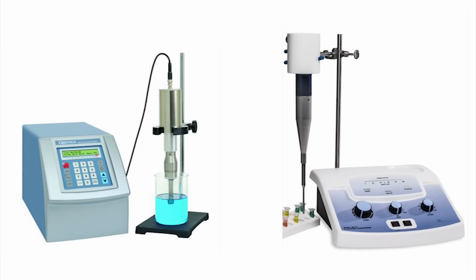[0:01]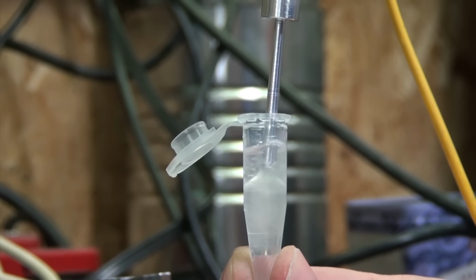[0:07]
I want an ultrasonic homogenizer. These are great little tools that can be used to quickly pop open cells to release proteins and DNA. Or they can produce emulsions that never separate, and can produce flashes of sonoluminescent light if they have enough power.
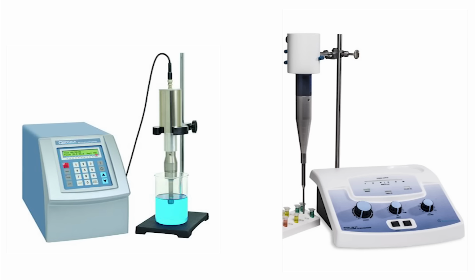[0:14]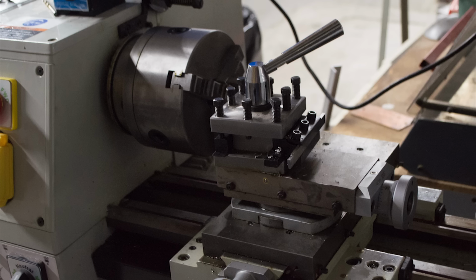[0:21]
Normally, you buy the kilowatt ones, which will cost well over a grand, which for a tool I'm only going to use a couple of times probably wasn't worth the investment. But now I've got a tool that can make anything, so I just built myself one instead.
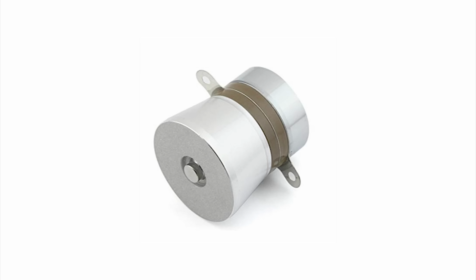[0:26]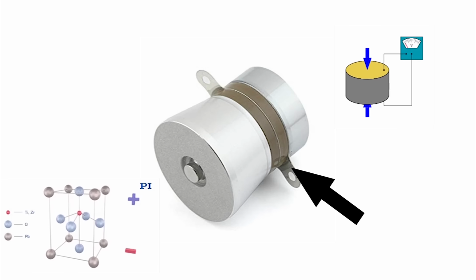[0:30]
To get this started, here's a quick tour of an ultrasonic generator. First, there's a piezoelectric crystal called a transducer that will shrink and contract as we put electricity through it. By changing the polarity quickly, we can make it vibrate thousands of times per second, producing ultrasonic waves. And the more power we put into it, the more it will shrink and contract during each cycle.
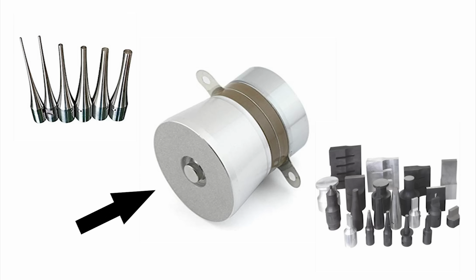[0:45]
All this motion is fed into what's called a horn, which is a big hunk of metal that takes these vibrations and focuses it the same way a lens focuses light. If we make the horn flare, it'll spread the vibrations over a larger area, but make them weaker. And if we make the horn pointy, it focuses and concentrates the vibrations, making them stronger over a much smaller area.
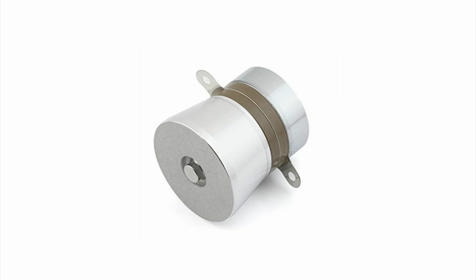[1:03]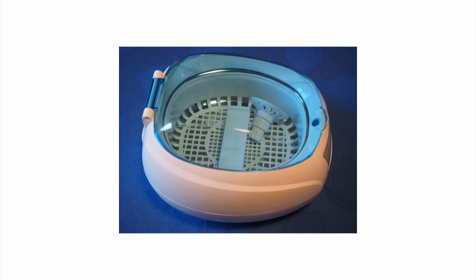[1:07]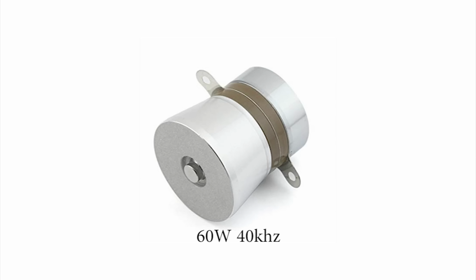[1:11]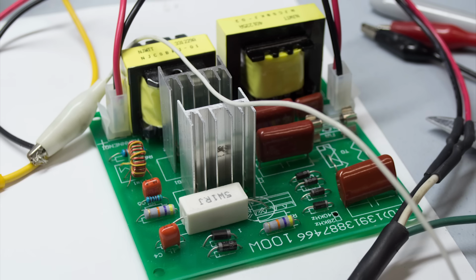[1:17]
The transducers I'm starting with are normally used for ultrasonic baths, the same kind you would use to clean jewelry, though mine are meant for an industrial cleaner. In this case, these are 60-watt transducers that are supposed to vibrate at about 40 kHz, or 40,000 vibrations per second. I bought mine with a matching driver circuit that produces the high-power electrical oscillations needed to get the transducer to run.
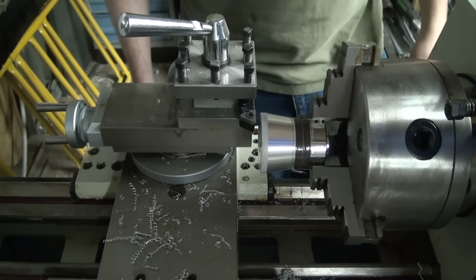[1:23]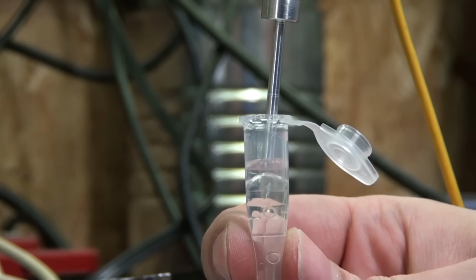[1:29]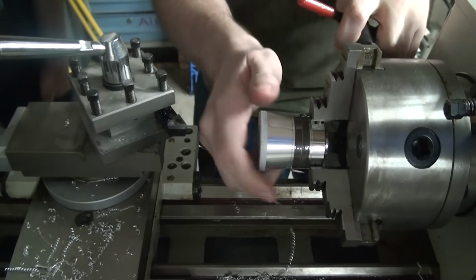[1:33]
The horn on the stock transducers flares out because they're built to shake an entire bath of water, but for the homogenizer, we want to concentrate that energy down as much as we can, so I chucked up one of the transducers in the lathe. In This Old Tony's video, he was able to get his apart, but mine were glued together and wouldn't budge, so I'm machining this all as one piece.
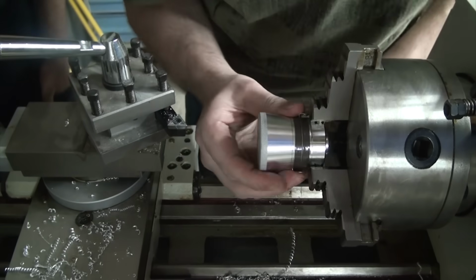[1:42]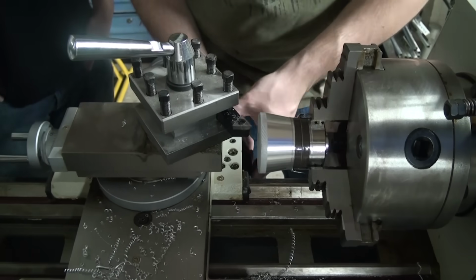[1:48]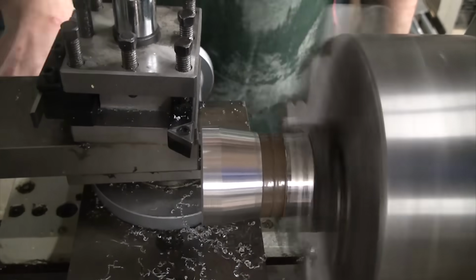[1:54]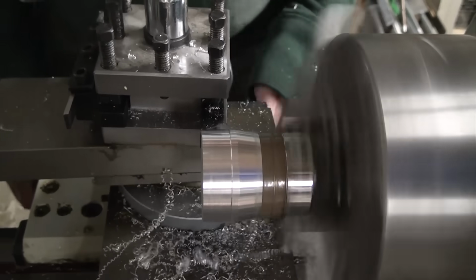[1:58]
Be careful if you try this, piezoelectricity works both ways, so the forces on the piezo make it generate a high voltage charge that really hurts if you get shocked by it. I've probably gotten zapped 6 or 7 times throughout this whole build. First up was to get rid of the flare of the transducer so it's just a nice cylinder and take a facing cut to remove the rough surface.
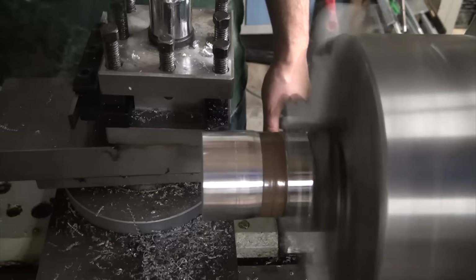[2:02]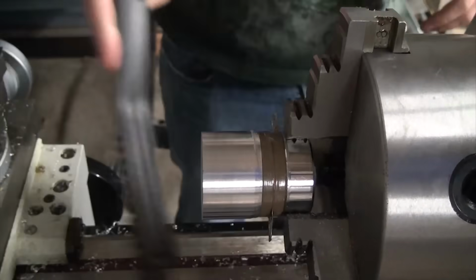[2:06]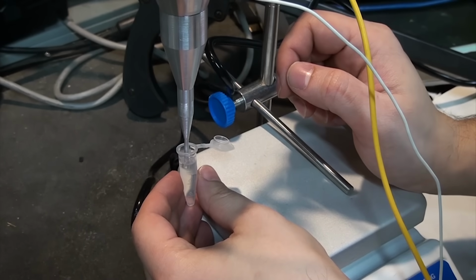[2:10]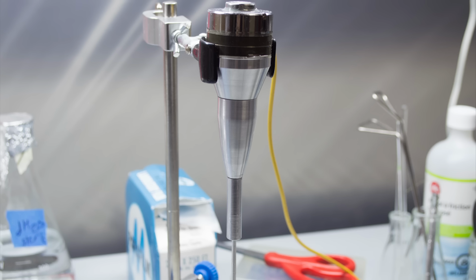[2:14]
For the sake of demonstration, and because I was playing with different shapes, I modified a second transducer this way as well, but unlike what you're about to see, made no further modifications to it. The original plan was to just make something that looked nice, which turned out to be a pretty bad idea, but worked out in the end after some tuning and reshaping.
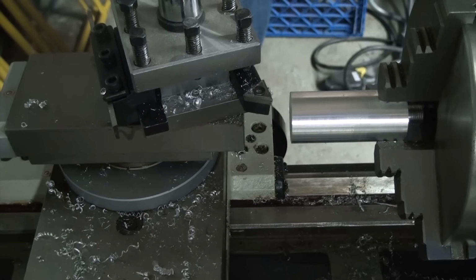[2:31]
So with the help of my engineer friend, we designed an insert that would thread into the hole in the front of the transducer. The idea was to use this to focus most of the energy down, and then drill and tap a hole in the end so we could have the ability to swap out different bits, like a homogenizer tip or blade. Also, we were designing based on the stock we had around the workshop, which played a big role in our choice of diameters, lengths, angles, and such.
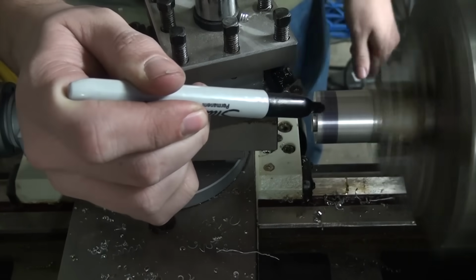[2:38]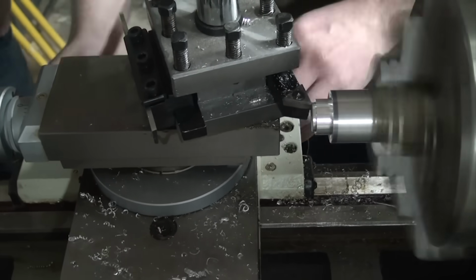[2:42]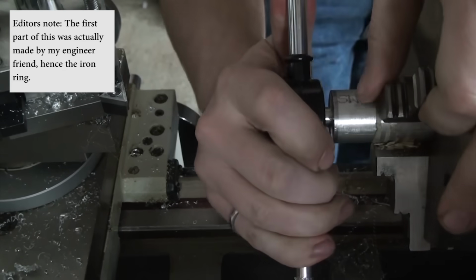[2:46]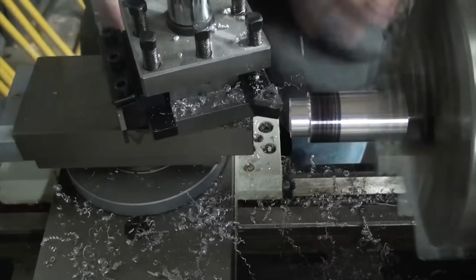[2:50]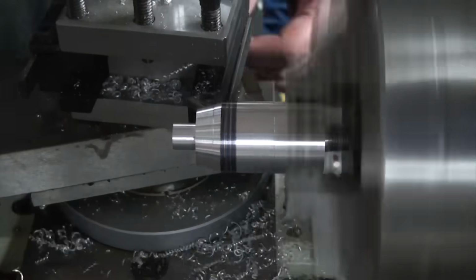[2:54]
So I went about making the insert, starting with the threaded end first, as the part would be awkward to grip once we started cutting the taper. We just used an M10 die to cut the thread, since we didn't want to mess with the gearing in the lathe to try and cut them. Then the part was flipped around, remounted, and the rest of the shape was turned. First the basic profile, and then the 15-degree taper. Finally, the end was drilled and then tapped.
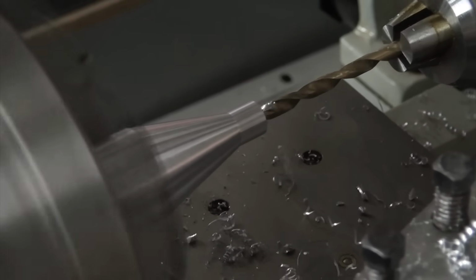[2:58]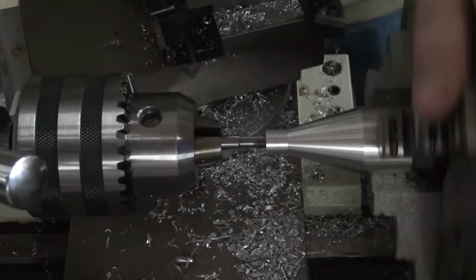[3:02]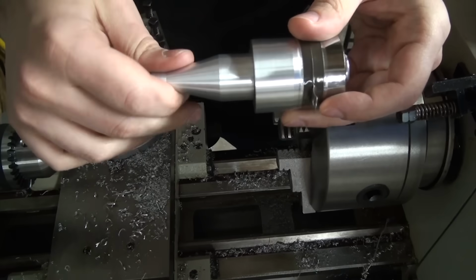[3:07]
What ended up being really lucky was that we happened to drill this hole way deeper than was actually needed, and this ended up saving the day down the line when this nub was removed for tuning. With the insert done, we can return to the horn of the transducer to finish the basic shape.
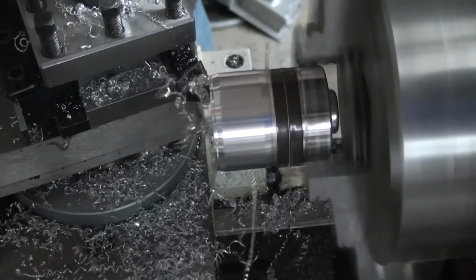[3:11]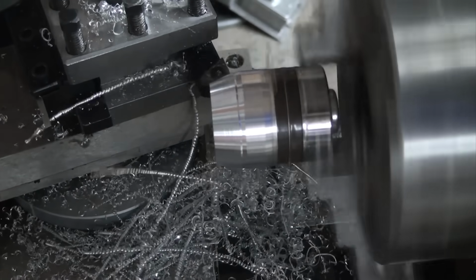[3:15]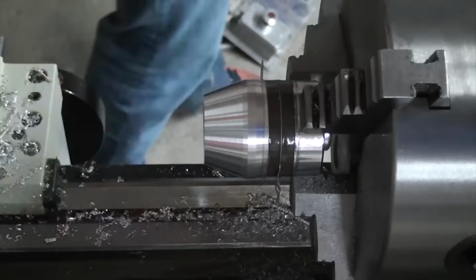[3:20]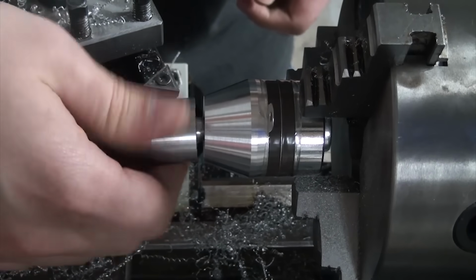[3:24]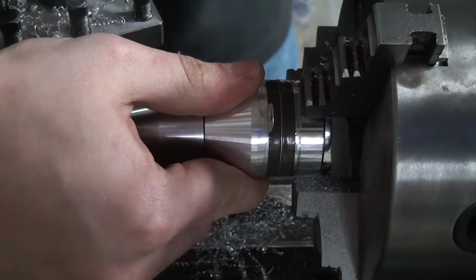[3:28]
This time we cut a much steeper angle, with the idea being to reduce the end diameter to match the diameter of the threaded insert we just made. I would just thread the insert in to check the progress, as well as taking repeated measurements. You can see that the insert doesn't sit quite flat. This was due to an error when we were cutting the threads, which, while ugly, didn't affect the final performance of the horn that much.
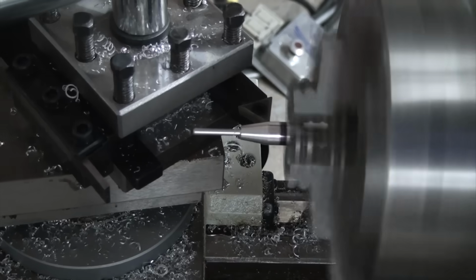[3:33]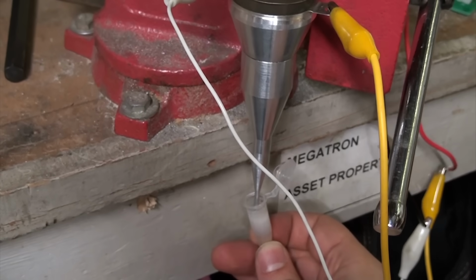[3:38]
And finally, to finish this first draft of the horn, we made a little aluminum piece to fit into the end that had a final diameter of about 3.5 mm. The idea being that this was the size needed to fit into the bottom of an Eppendorf tube.
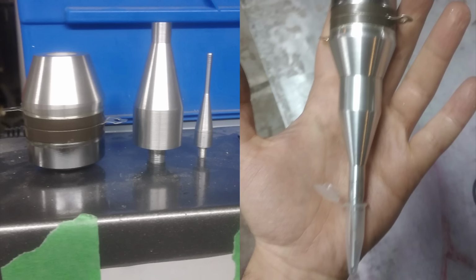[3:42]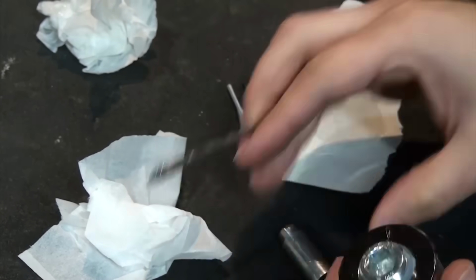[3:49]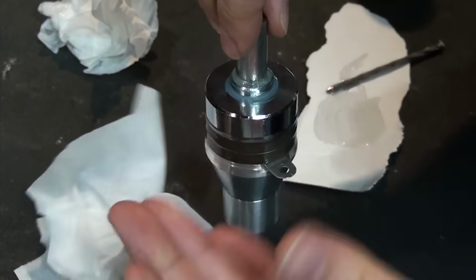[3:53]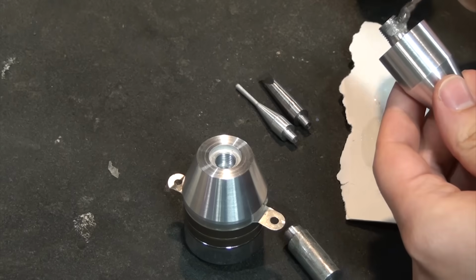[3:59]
Now, at this point, I knew nothing about ultrasonics and was making this up as I went, so the geometry was super off, and to add insult to injury, I epoxied in a steel nub on the end to be something to grab onto for mounting, since I didn't know how you're supposed to hold these. You're actually supposed to grab these by the working end and find nodal points, and there's a whole finesse to it. At this point, I also epoxied the transducer to the first insert.
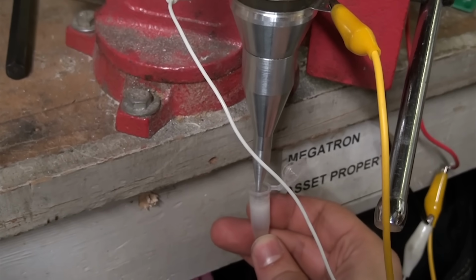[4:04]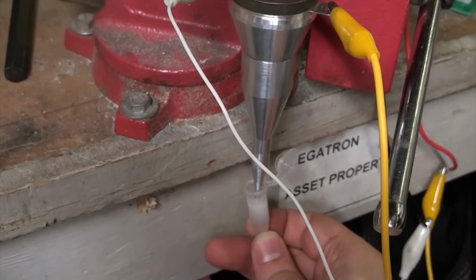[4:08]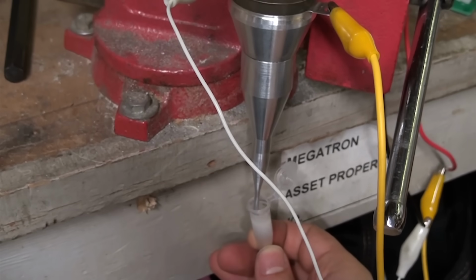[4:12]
We gave the horn a test run, and even though the shape wasn't right yet, the horn did kind of work. We mixed a bit of WD-40 in water, which normally don't mix very well, and then stuck the ultrasonic tip into the mixture. When I pressed the tip gently on the side of the tube, it seemed to distort things just enough to get the vibrations closer to an actual resonant frequency, and some white emulsions started forming. But most of the 60 watts was just being lost to heat, so eventually the whole thing got too hot to hold.
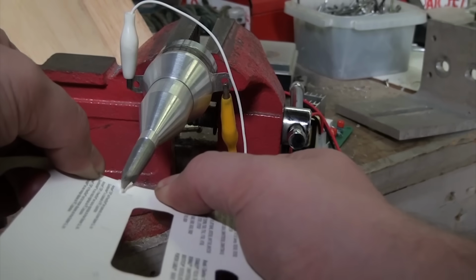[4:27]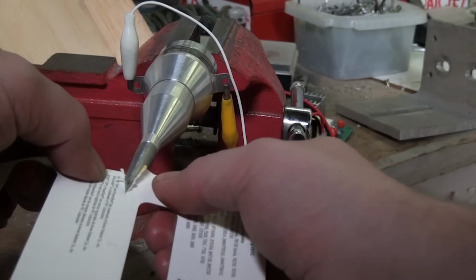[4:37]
I also turned a little steel knife attachment, and while there were moments of it kind of doing a thing that seemed like it was cutting a bit better, for the most part it was really just underwhelming. I've got one more transducer left though, so I may take another swing at this in the future.
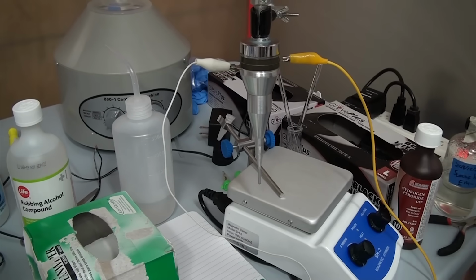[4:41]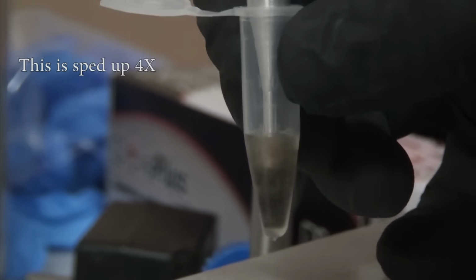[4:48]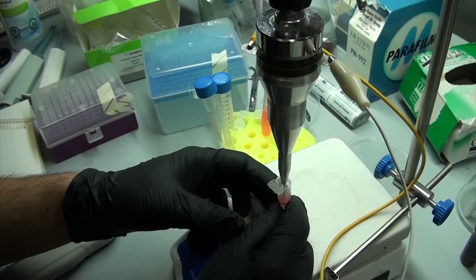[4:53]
At this point, I didn't think I was going to bother tuning this because I assumed it was a difficult process, so the horn was cleaned and brought into the lab for use. I tried homogenizing a spider with it, which actually worked okay, but then I tried some fluorescent E. coli and it didn't really do much.
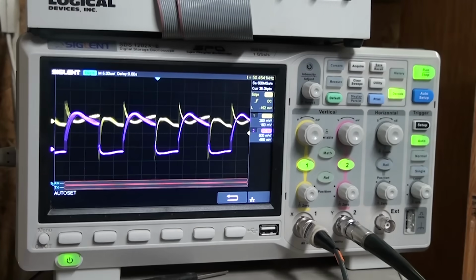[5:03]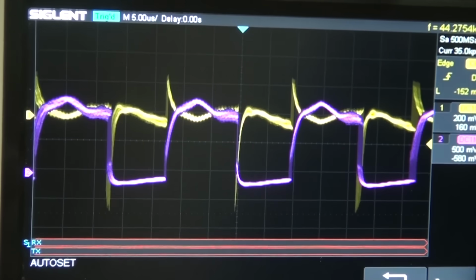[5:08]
But recently, I found a video by Lindsay Wilson, which I've linked in the description, about tuning ultrasonic horns. It's actually way easier than I thought, and just requires an oscilloscope and frequency generator to get the basic job done. I'm not going to get into too much detail because I want you to go watch his video.
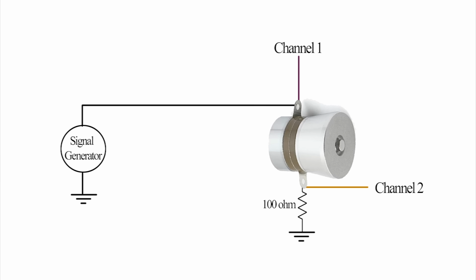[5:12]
But the basic idea is you set up the scope with two different channels. One channel is just listening to the raw output of the frequency generator, which is also connected to one side of the transducer. The other side of the transducer is connected to ground via a 100 ohm resistor, and the second probe channel is connected at the point between the resistor and transducer. Both probes are then connected to the same common ground.
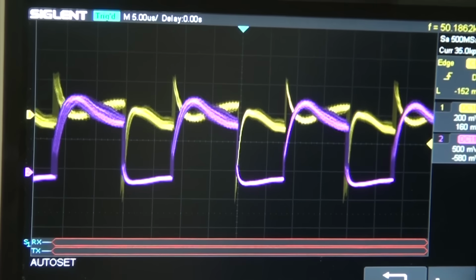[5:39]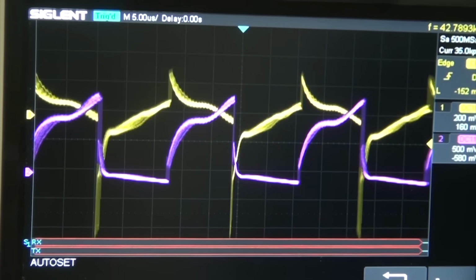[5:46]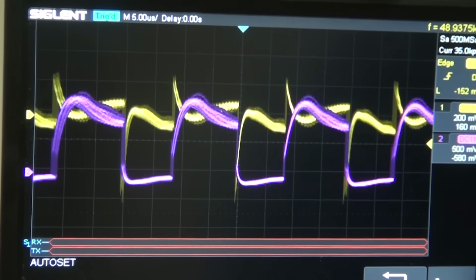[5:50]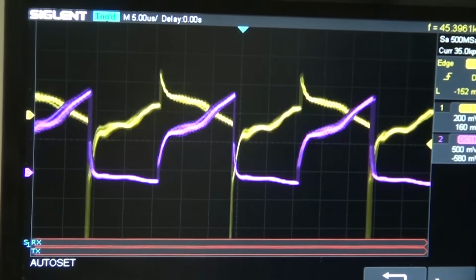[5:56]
Now, ideally, you do this with a frequency generator that can produce a sine wave, as it makes this way easier. But mine only does square waves, so it took some tinkering to understand what I was looking at. We're looking for two things. First, we want the maximum amplitude on the channel connected to the output of the transducer. The input frequency that maximizes this amplitude is likely the resonant frequency, as it's drawing the most current due to proper function. And then the other thing we're looking for is when the transducer's graph is nice and smooth, and lines up with the input signal graph.
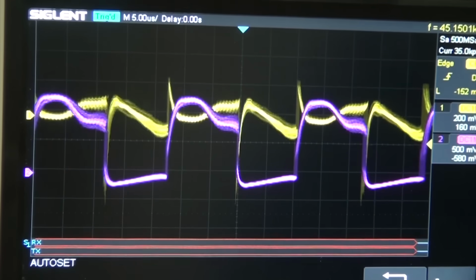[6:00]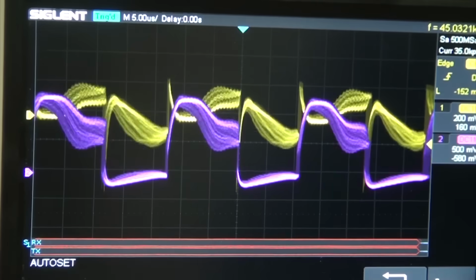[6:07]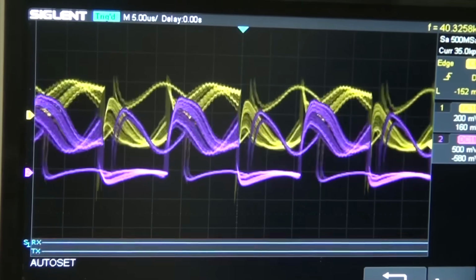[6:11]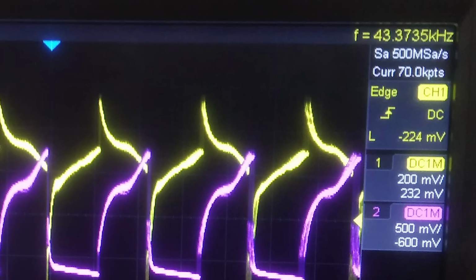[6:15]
In my case, because it's a square-ish wave, this is what it looks like when that happens. You can see the transducer curve flattens out, and if I shift the frequency any lower, the graph pretty suddenly changes. The number in the top right of my scope shows the current frequency of the input signal, so when we hit this point, we can just read that number and know what the resonant frequency is.
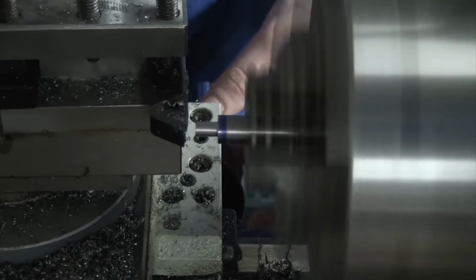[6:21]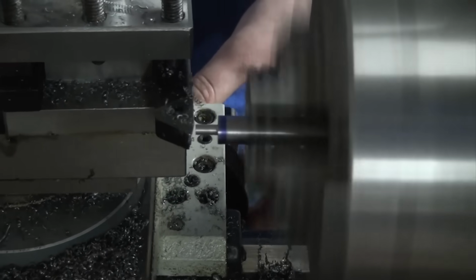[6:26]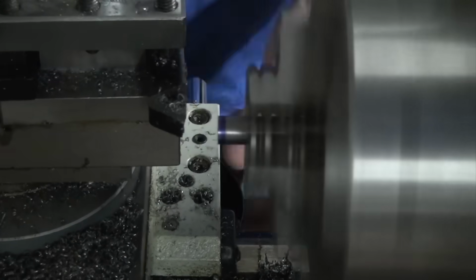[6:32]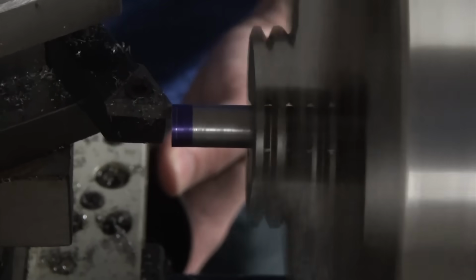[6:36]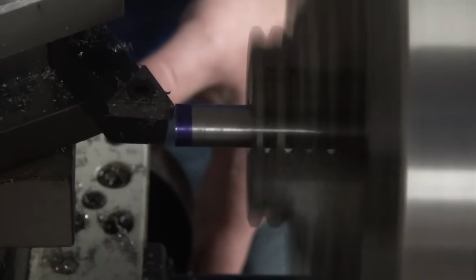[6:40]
Okay, so now we know how to measure the horn, how do we actually tune it? Well, by and large, the majority of what changes the resonant frequency of a horn is its length, and the length of any of the different features in a horn. Since the driver I have works at about 40 kHz, we need to tune the horn to also have a resonant frequency of about 40 kHz. This means shrinking the length until this happens, taking little amounts off the end, and then measuring over and over again.
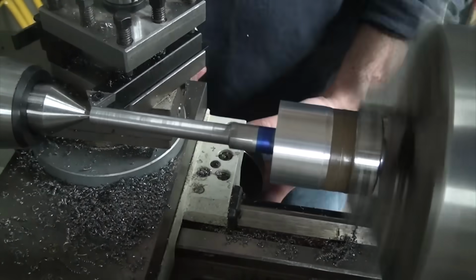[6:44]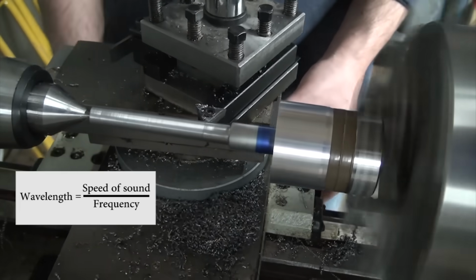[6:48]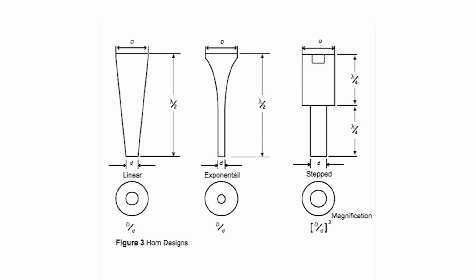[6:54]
Remember that second horn I mentioned? I made a steel insert for it that was oversized at about 9 centimeters long. I had used the wavelength formula and the number I found for the speed of sound in steel to calculate one half of a wavelength at 40 kHz. Much like a radio antenna, a good horn should be about one half of a wavelength in total length, and any features should be about one quarter of a wavelength, as you can see from this diagram.
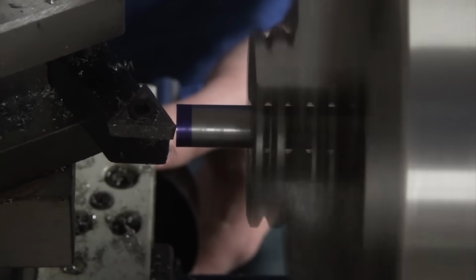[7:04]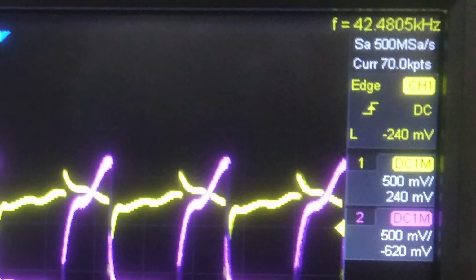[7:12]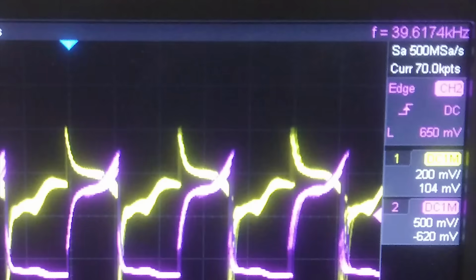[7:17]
The formula said half a wavelength should be about 7 centimeters long, so by making the insert too long, I could shorten it until it hits resonance. And sure enough, that's exactly what happened. When I first measured it, it was resonating at about 43 kHz, but by removing material, I was eventually able to bring it down to 40 kHz.
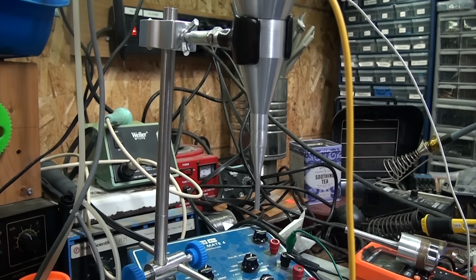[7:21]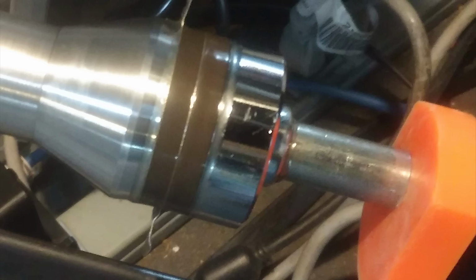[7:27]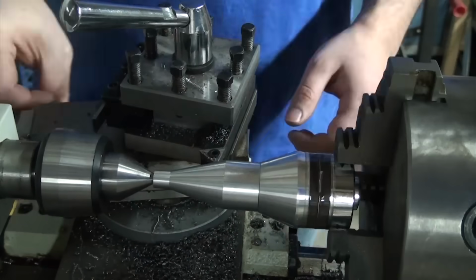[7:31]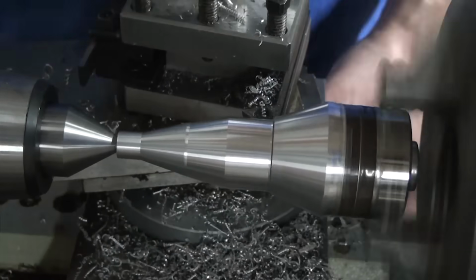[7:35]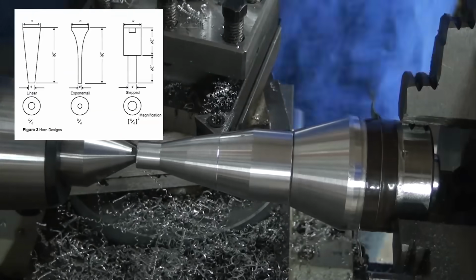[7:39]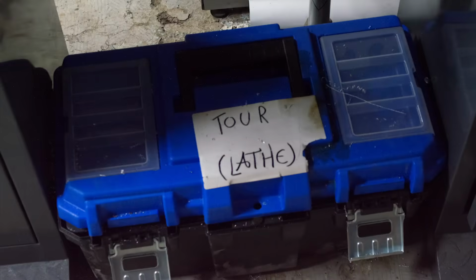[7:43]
Okay, now back to the fancier looking transducer. For the tuning process, first up I removed the steel nub I had added at the back, and that alone shaved 7 kHz off the resonant frequency. Then I ended up reshaping the main body a bit to be a bit more rounded and to take some weight off. Again, making it all up as I go and mostly going for an aesthetically pleasing look while trying to find some balance between all three styles of horn using the material I had available. My current tool set, both literally and skill-wise, is pretty limited, so this seemed like the best option.
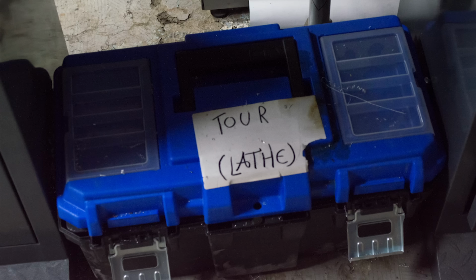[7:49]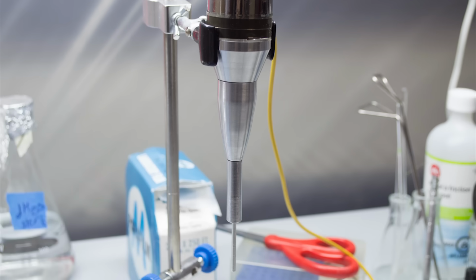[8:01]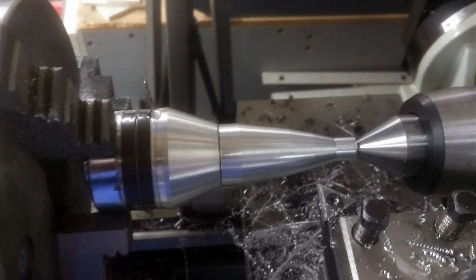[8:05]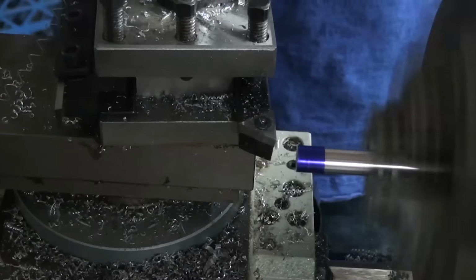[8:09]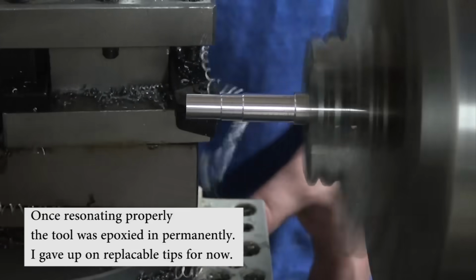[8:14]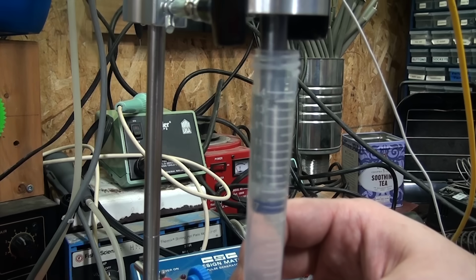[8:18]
I also removed the nub at the end where the tip screws in. At this point with no tip, the horn was resonating too low and I had actually overshortened it, but I had done that on purpose. My idea was to just make a longer tool to thread in here that could be tuned to the right length, since it's easier to work with a normal rod of aluminum than this whole contraption which needed to be mounted between centers. So I did just that, and I made a new threaded insert out of aluminum, by first making the basic shape and threaded end, then making the 3.5mm probe end, which was shortened to length until the whole assembly resonated. Okay, now for the moment of truth, did these changes actually make a difference?
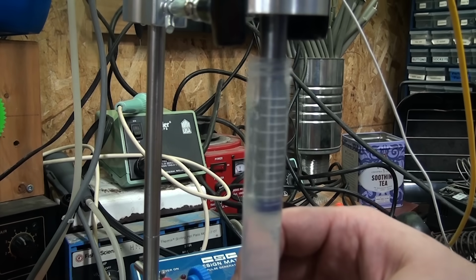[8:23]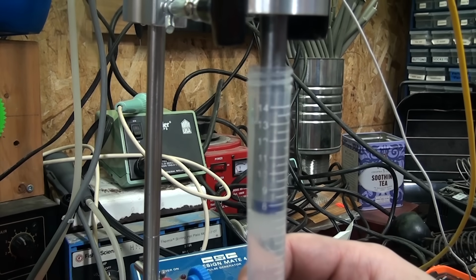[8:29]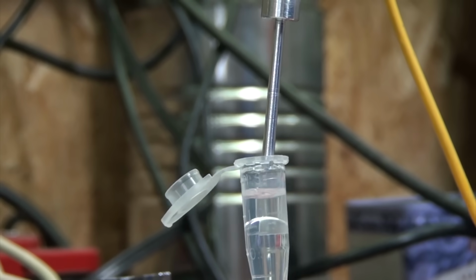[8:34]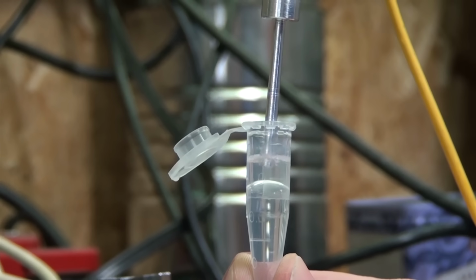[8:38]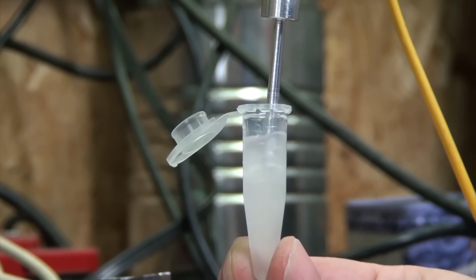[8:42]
Well, see for yourself. Here's the less complex horn and a tube of water with some kerosene on top. Almost the moment the ultrasound touches the mixture, an emulsion starts forming, and no need to deform the end. Next up, here's the fancy horn with the same test, but in a much smaller tube. Not only is the result different compared to the first attempt, it even sounds different, and the fluid gets violently mixed as soon as the probe touches the liquid.
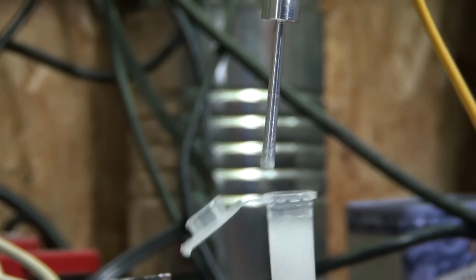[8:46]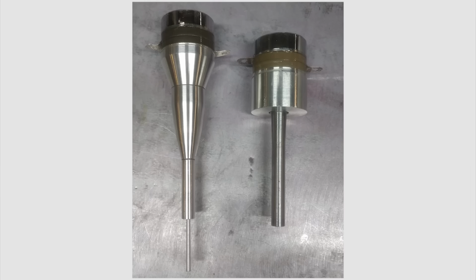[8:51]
You can even see little fluid jets come flying off the end, or in moments when the horn is still on, a mist of aerosolized particles floating off the tip. What I find really interesting is the difference between both horns. They're both tuned to the same frequency, and while I haven't measured the gain directly, it's pretty clear that the horn with the smaller end diameter seems to homogenize things better.
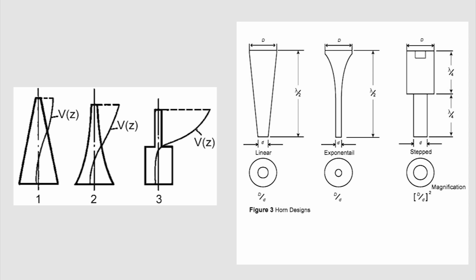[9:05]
This makes sense, as all the literature I've been reading seems to suggest that the gain is determined by how much the diameter of a horn is reduced at the working end. The exact amount of gain is determined by the shape of the horn, which is outside of my ability to really design right now. But in general, the pointier it is, the higher the gain.
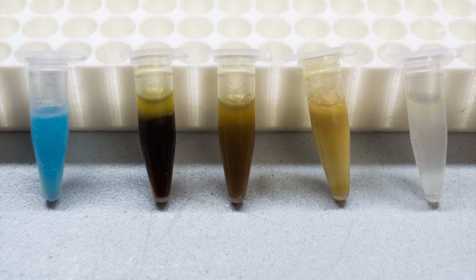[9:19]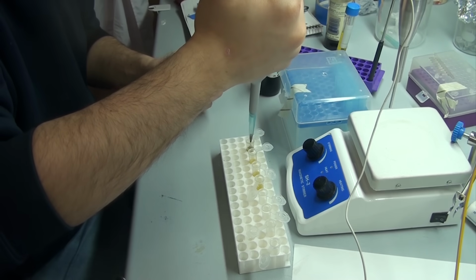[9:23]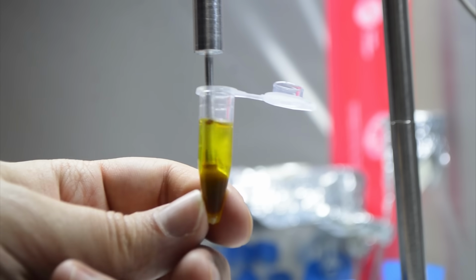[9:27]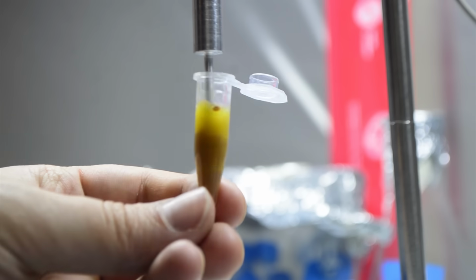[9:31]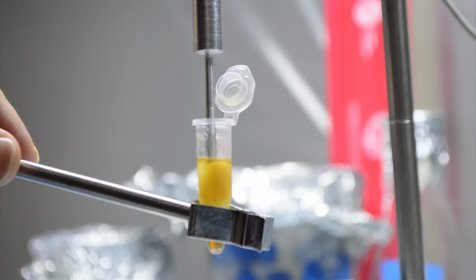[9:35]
To close out this video, let's make some more emulsions. Here I've got your basic vinaigrette mix, which is just a mixture of balsamic vinegar and olive oil. You could say this is about to be the world's most precise vinaigrette. Again, as soon as the probe touches the liquid, things quickly get mixed. I also tried the same thing but with sesame oil and water, which made a light beige mixture.
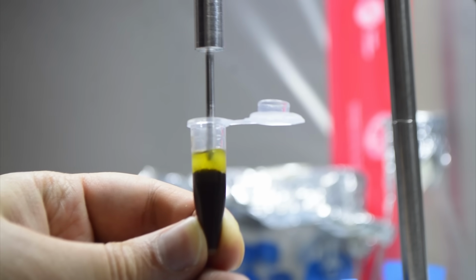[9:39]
Just for fun, I tried making reverse balsamic, where I inverted the ratio from 3:1 oil to vinegar to 1:3 oil to vinegar. You can see that no matter how hard I try, it just doesn't want to mix. It gets a bit cloudy, but it doesn't homogenize nearly as well. The two just separate out really quickly. I guess the pH must really inhibit emulsion formation.
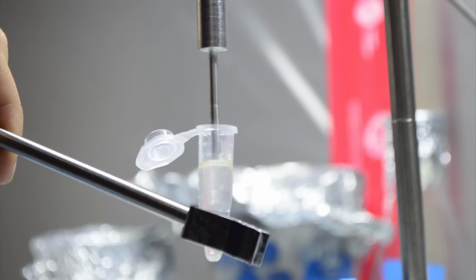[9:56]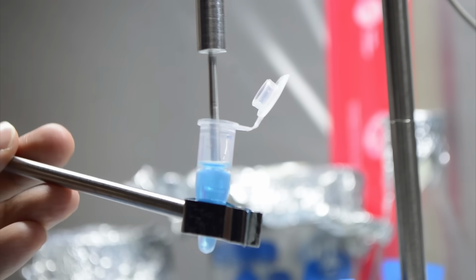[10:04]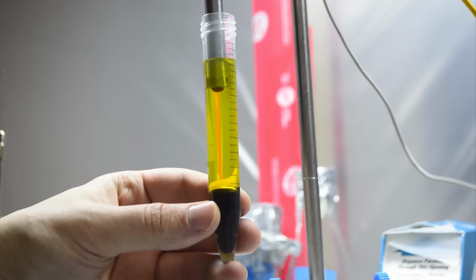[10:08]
I also tried some safflower oil on water just to see what happens if you only use a very small amount of oil. The liquid does get cloudy but remains translucent unlike the others. The blue one is the same test but with some blue dye in the water. One note is that this only really works with things where you can get the probe to touch the interface between the two liquids. So when I tried making a much bigger batch of balsamic with the big probe, since I couldn't reach the liquid interface, no real mixing happened.
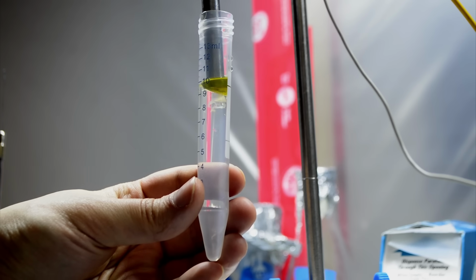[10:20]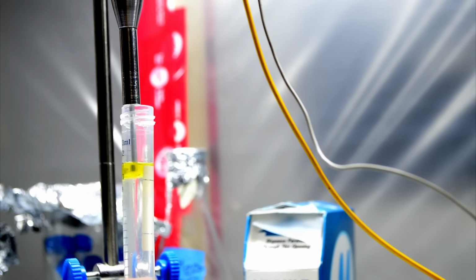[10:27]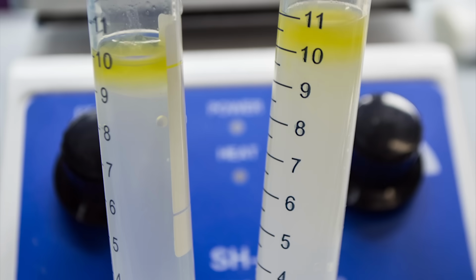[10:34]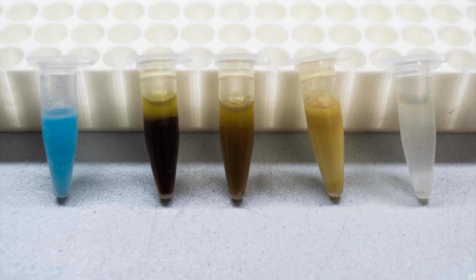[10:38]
And finally, a quick comparison between the horns. Here I've got a tiny amount of olive oil on the surface of some water. Both horns manage to homogenize things, but the smaller diameter horn seems to do a way better job. So I guess the only question now is, what else do I do with these? I still plan on using them for lab-specific tasks, as I mentioned earlier, but if you've got other interesting things that can be done with a probe like this, let me know in the comments.